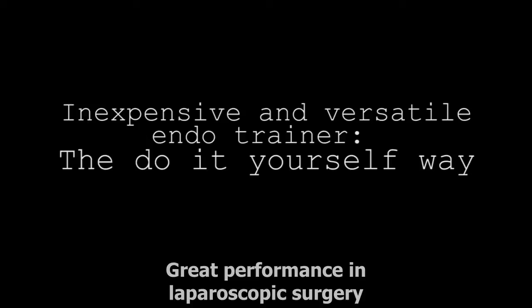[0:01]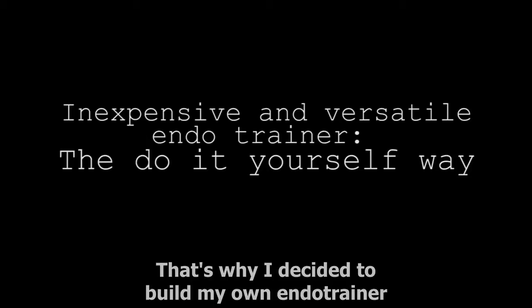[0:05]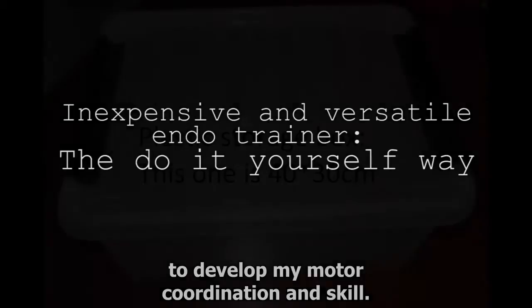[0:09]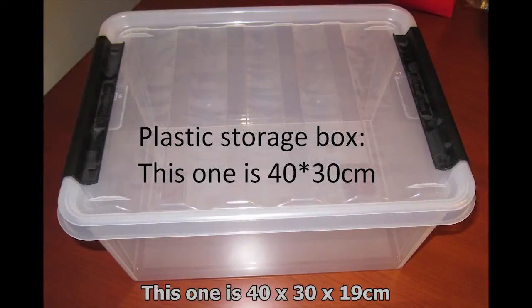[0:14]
Great performance in laparoscopic surgery can only be achieved with rigorous training. That's why I decided to build my own endotrainer to develop my motor coordination and skill. You will need a plastic storage box. This one is 40 by 30 by 19 centimeters.
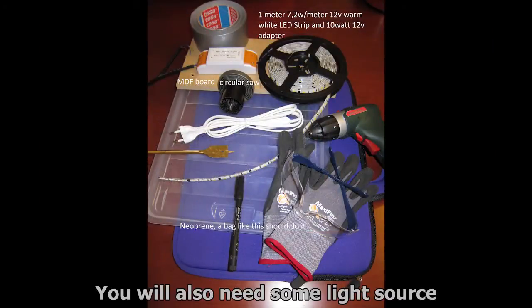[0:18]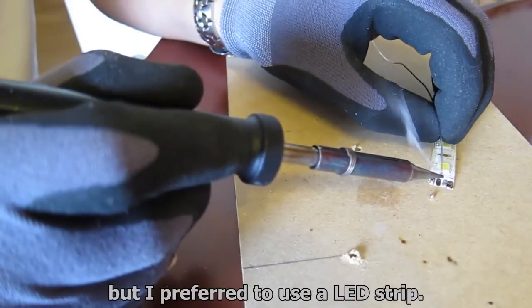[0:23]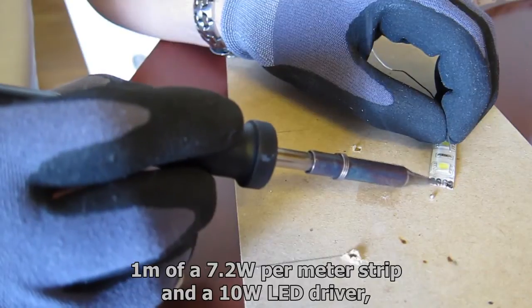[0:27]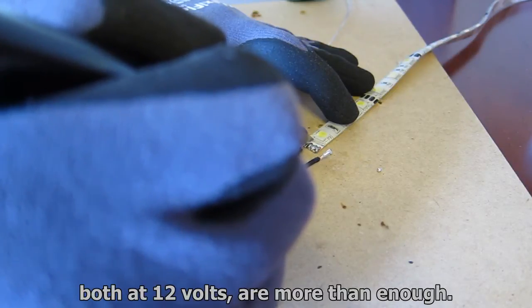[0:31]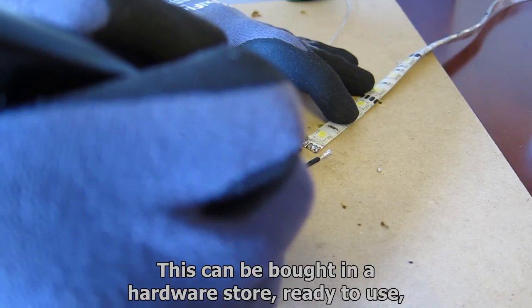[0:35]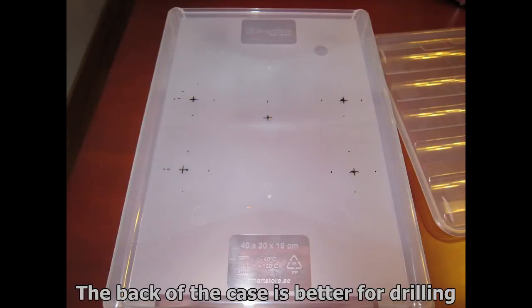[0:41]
You will also need some light source. A ready-made fluorescent light fixture should do it, but I prefer to use a LED strip. 1 meter of a 7.2 watt per meter strip and a 10 watt LED driver, both 12 volts, are more than enough. This can be bought in a hardware store ready to use for those who do not wish to splice and solder wires. The back of the case is better for drilling.
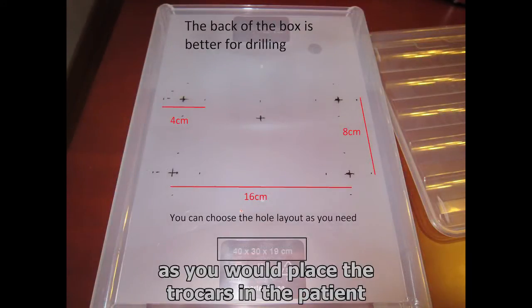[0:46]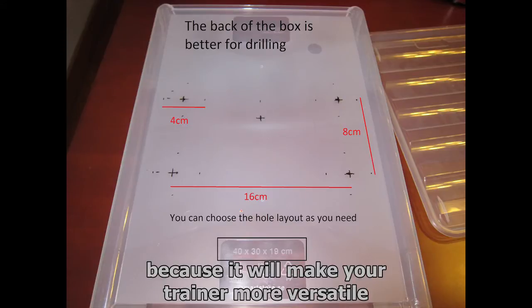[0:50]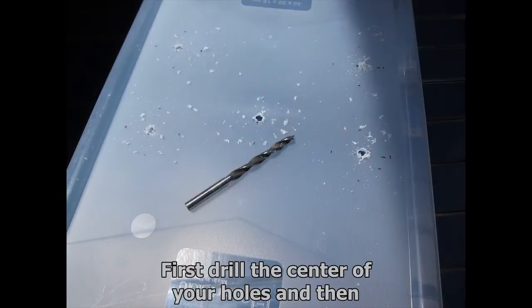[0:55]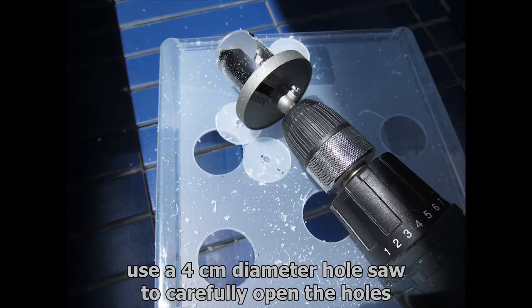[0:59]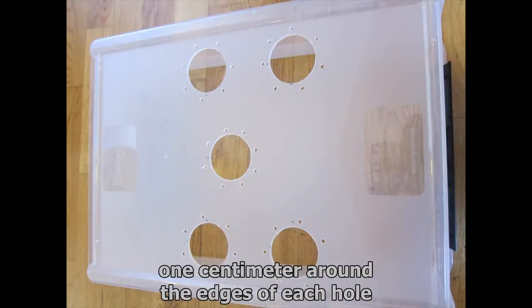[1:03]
You should mark the center of your holes as you would place the trocars in a patient. You should mark all possibilities you use because it will make your trainer more versatile. First drill the center of your holes and then use a 4 cm diameter hole saw to carefully open the holes. Then drill 3 mm holes less than a centimeter around the edges of each hole.
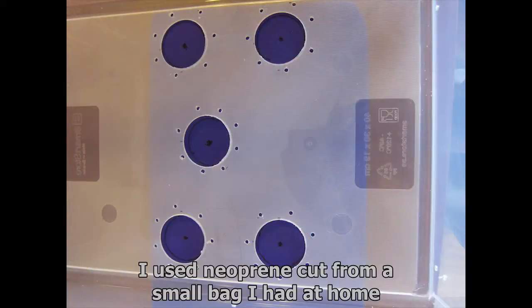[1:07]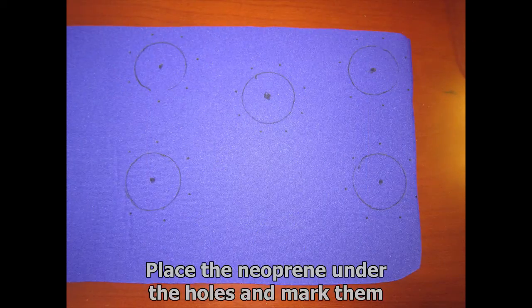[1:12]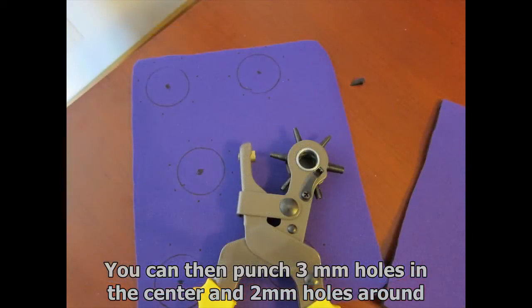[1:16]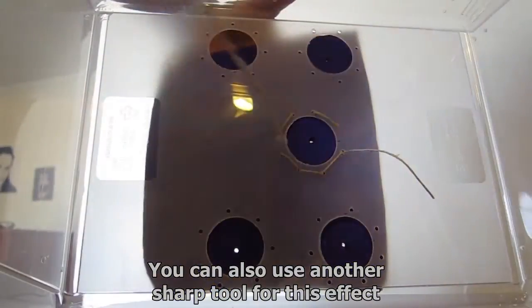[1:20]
I used a neoprene cut from a small bag I had at home. Place the neoprene under the holes and mark them. You can then punch 3 mm holes in the center and 2 mm holes around. You can also use another sharp tool for this effect.
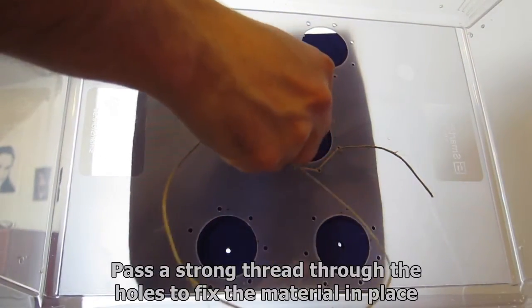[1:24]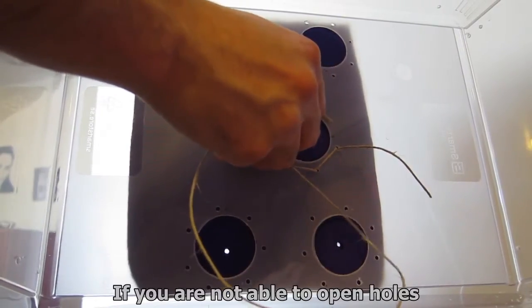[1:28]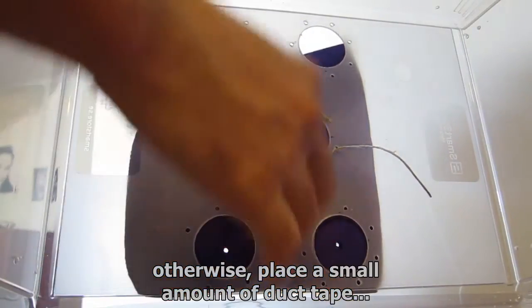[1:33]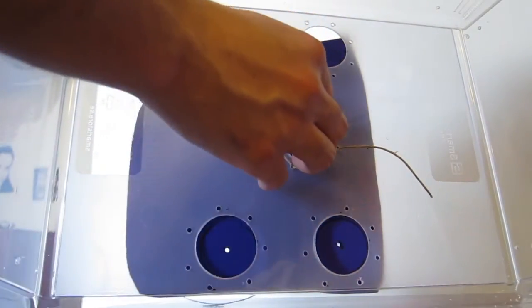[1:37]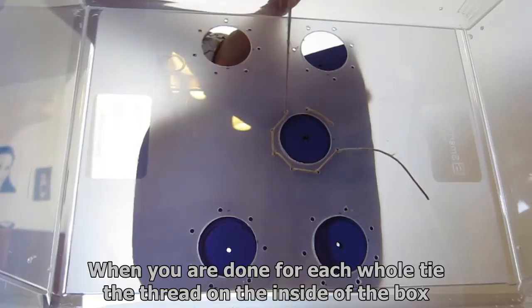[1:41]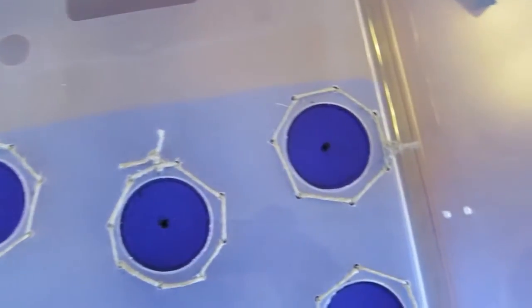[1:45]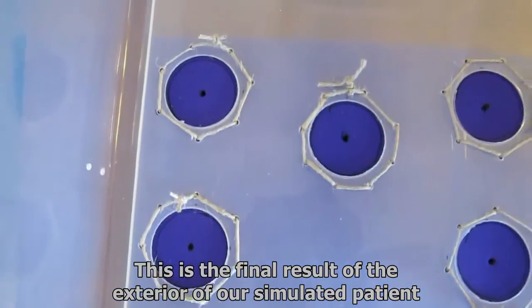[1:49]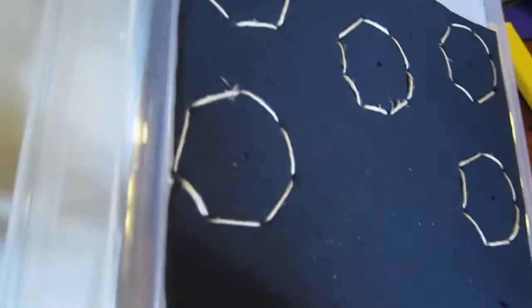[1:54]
Pass a strong thread through the holes to fix the material in place. If you are not able to open holes in the neoprene, it is better to use a needle. Otherwise, place a small amount of duct tape on one end to make the thread stiffer. When you are done for each hole, tie the thread in the inside of the box. This is the final result of the exterior of our simulated patient.
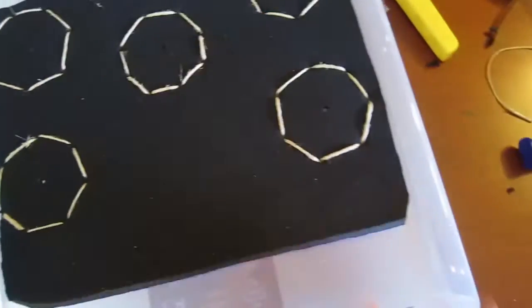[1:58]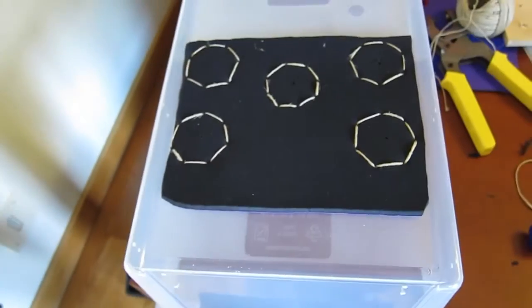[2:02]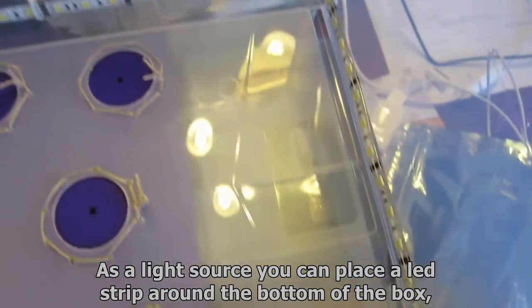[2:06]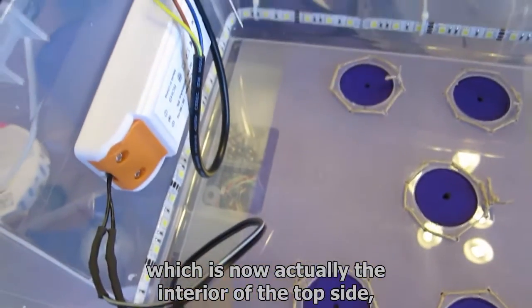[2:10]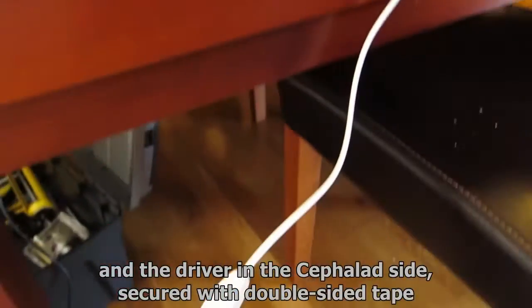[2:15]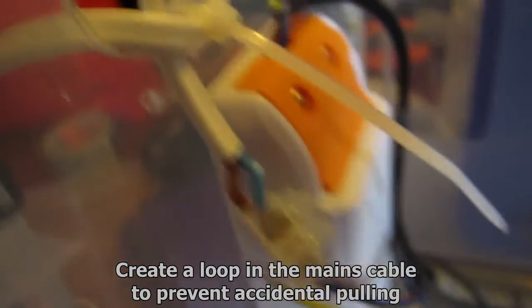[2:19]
As for the light source, you can place the LED strip around the bottom of the box, which is now actually the interior of the top side, and the driver on the cephalad side, secured with double-sided tape. Use cable ties to fix the strip and cables in place. Create a loop in the mains cable to prevent accidental pulling.
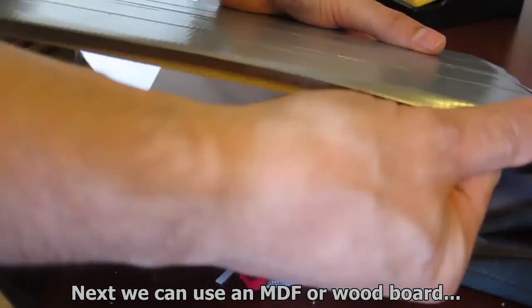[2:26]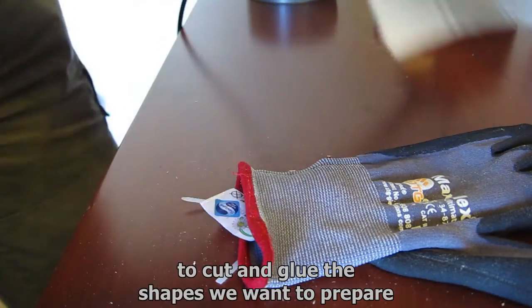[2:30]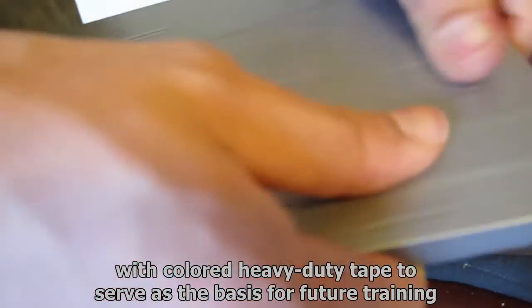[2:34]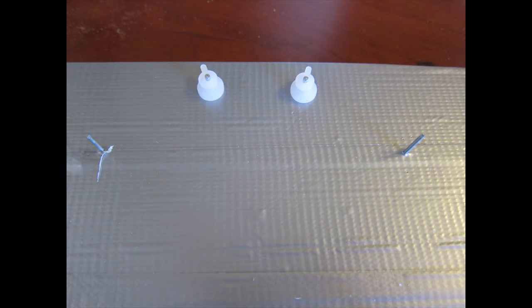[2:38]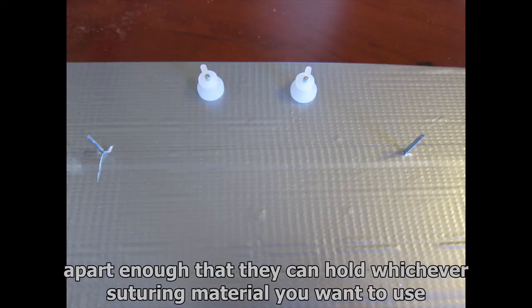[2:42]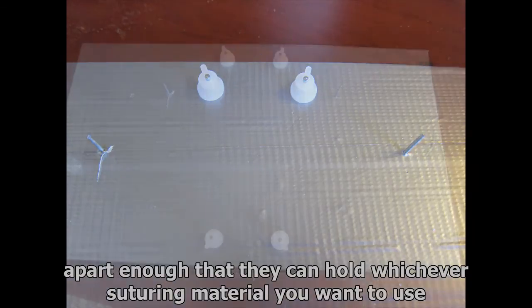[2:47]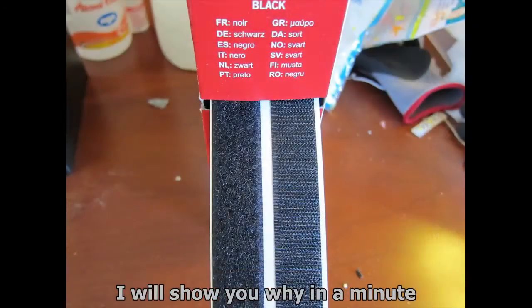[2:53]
Next, we can use an MDF or wood board to cut and glue the shapes we want to prepare. A small single piece of board can be covered with colored heavy-duty tape to serve as the basis for future training. It is convenient to nail 4 headless nails to the board, apart enough that they can hold whichever suturing material you want to use. I would also recommend these 4 small wall picture fixings. I will show you why in a minute.
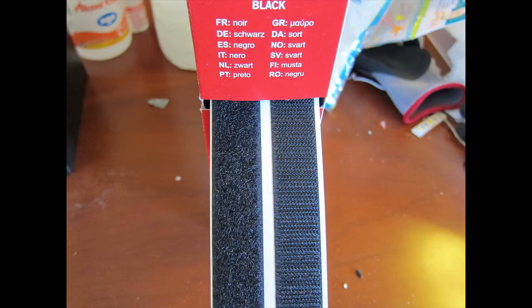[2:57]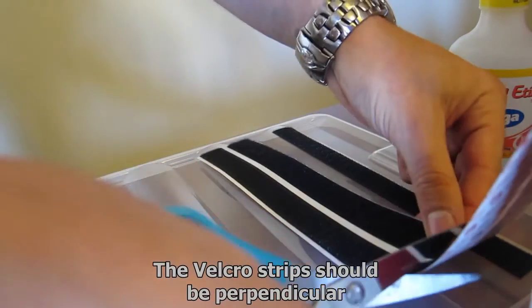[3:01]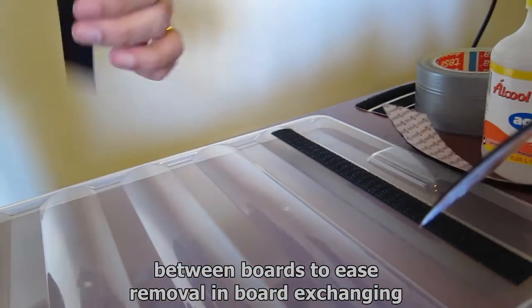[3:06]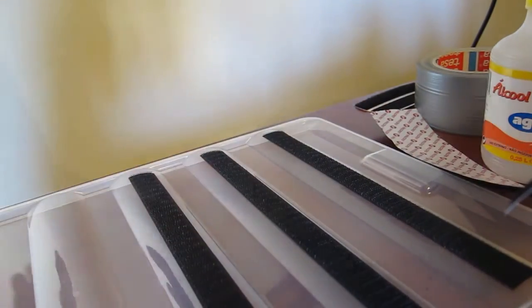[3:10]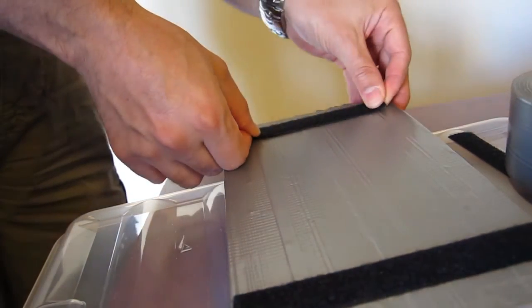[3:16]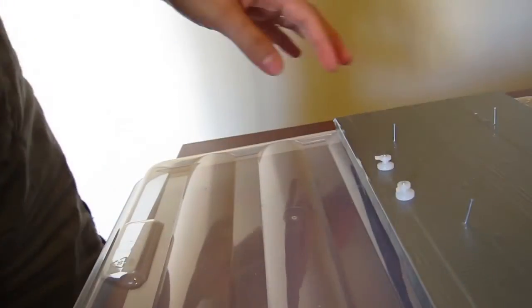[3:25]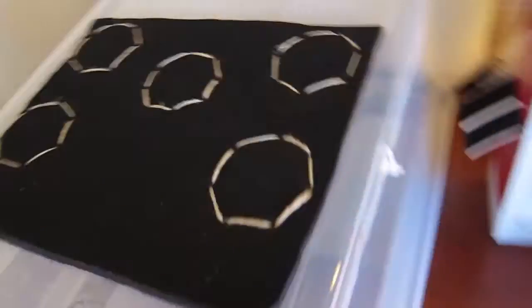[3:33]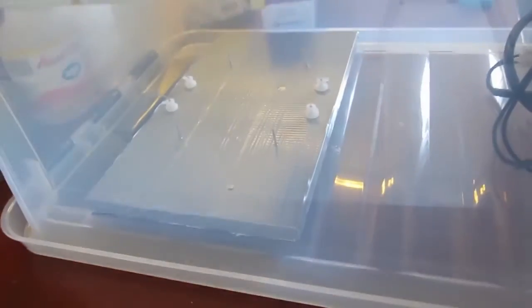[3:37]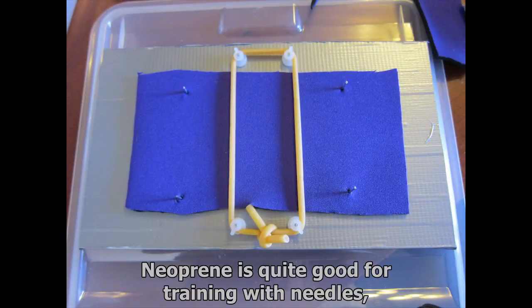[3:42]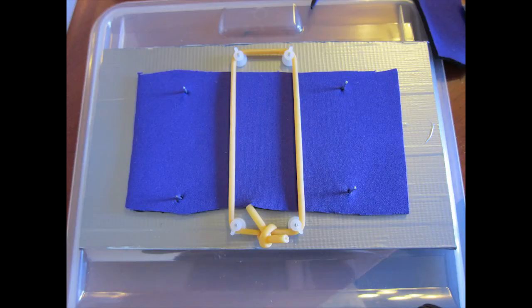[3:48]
You may use Velcro to fix the boards in place. This way, you can change them as you like. The Velcro strips should be perpendicular between boards to ease removal and board exchanging. Neoprene is quite good for training with needles, and a Foley catheter may be used for training tension knot tying.
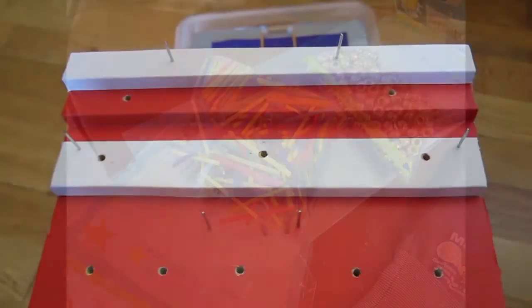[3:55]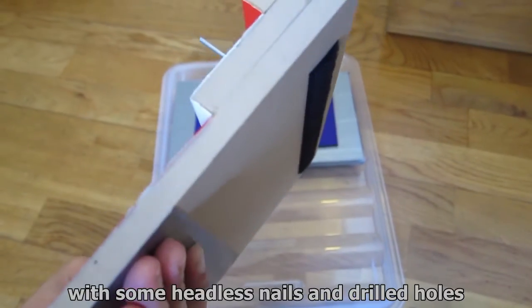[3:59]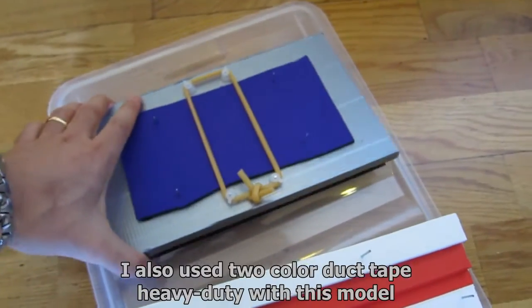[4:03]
You can make use of many materials to complete your training boards. Here you can see various sized MDF boards glued together, with some headless nails and drilled holes. I also used 2 color duct tape heavy duty with this model.
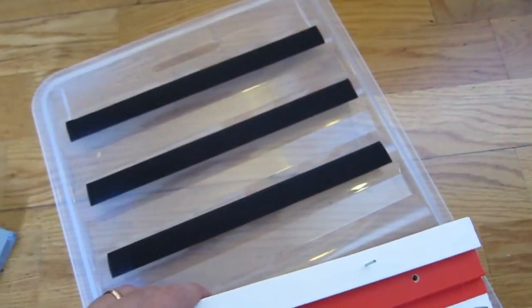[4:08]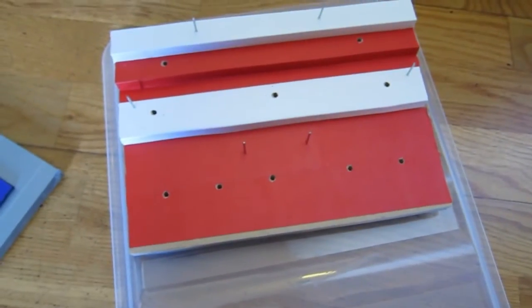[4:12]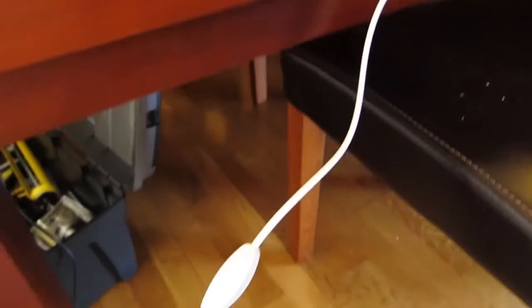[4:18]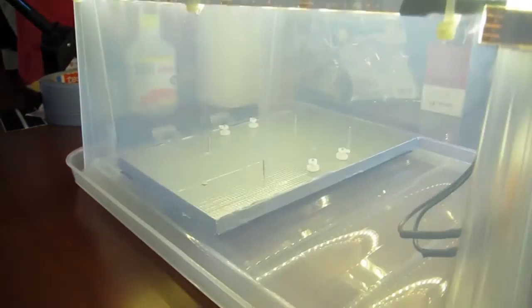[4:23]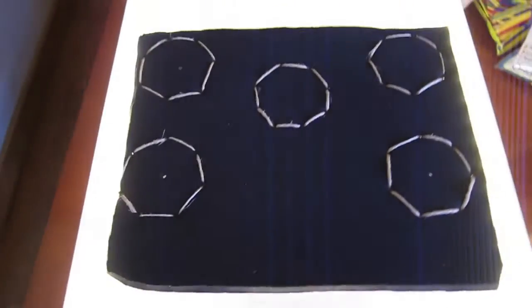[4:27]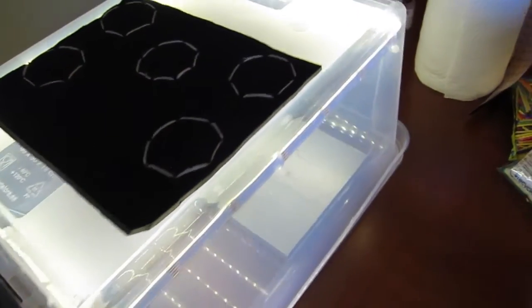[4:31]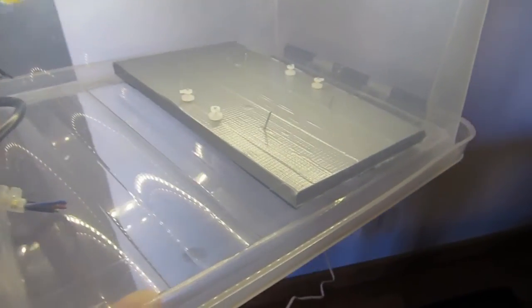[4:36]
Thank you.
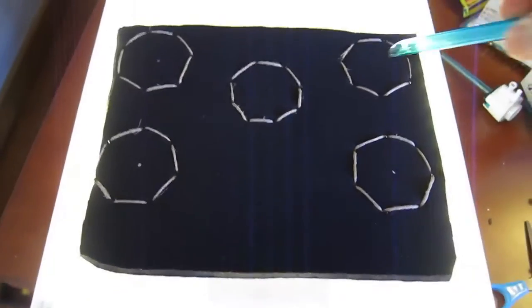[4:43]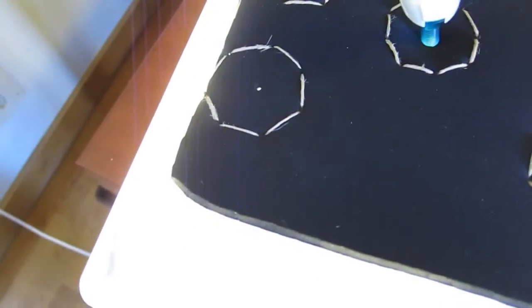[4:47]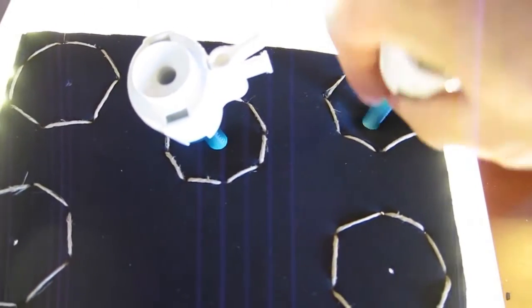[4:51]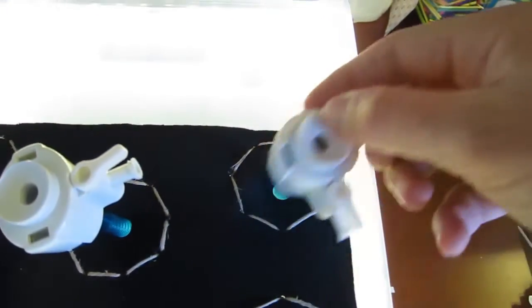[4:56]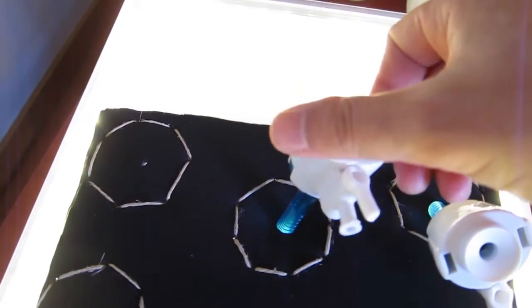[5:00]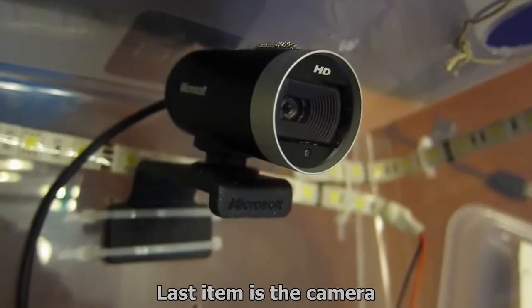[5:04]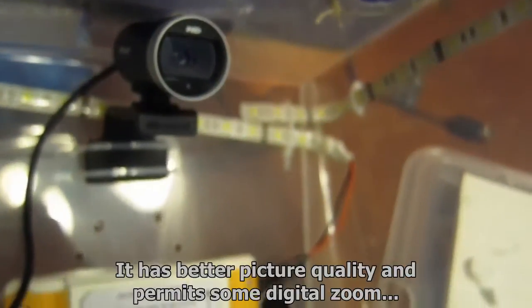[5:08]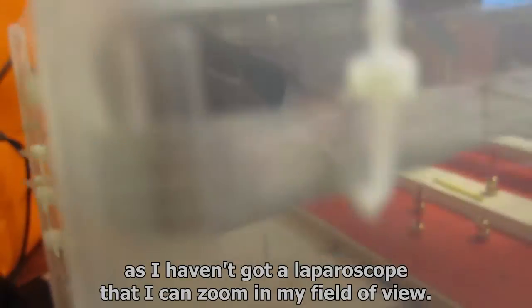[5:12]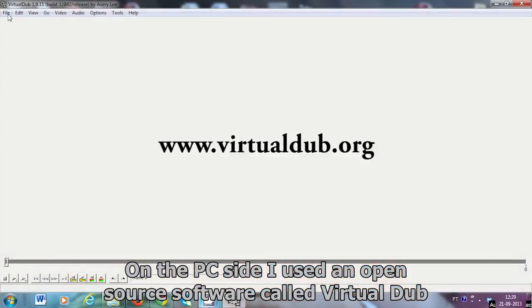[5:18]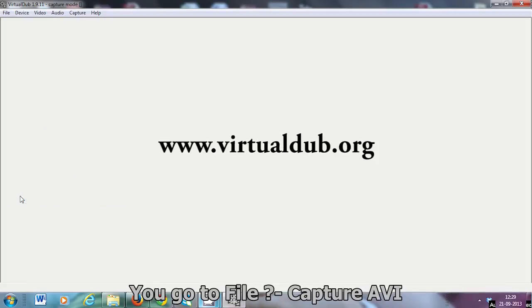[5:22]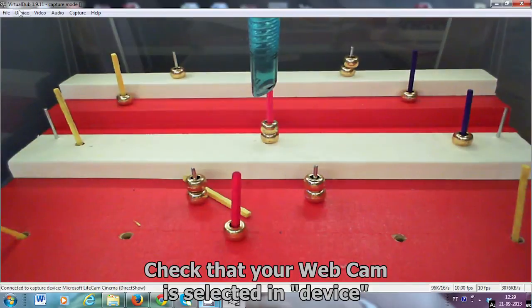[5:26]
Last item is the camera. I bought an HD camera for about 36 euros. It has better picture quality and it permits some digital zoom, as I haven't got a laparoscope that I can zoom in my field of view. On the PC side, I use an open source software called VirtualDub. You go to File, Capture AVI, check that your webcam is selected in Device.
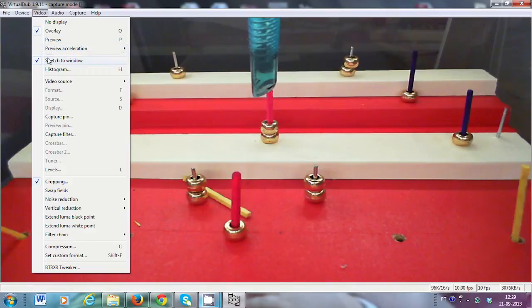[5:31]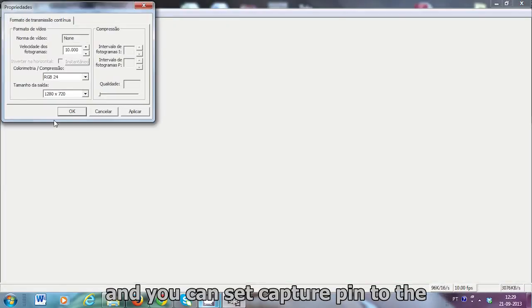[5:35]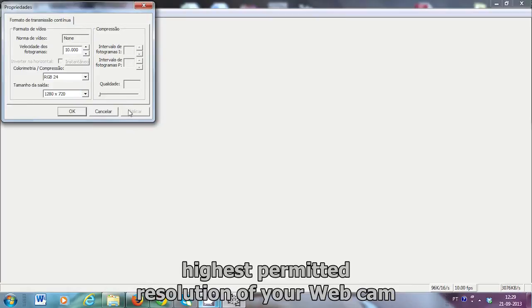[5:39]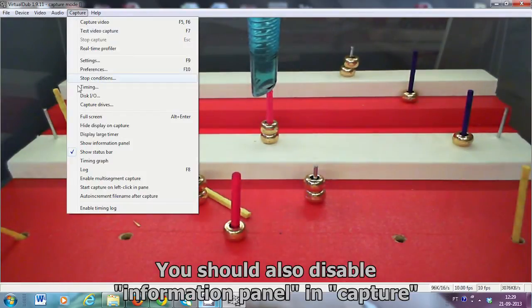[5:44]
Then you go to the Video, stretch the window, and you can set Capture Pin to the highest permitted resolution of your webcam. You should also disable the Information Panel in Capture.
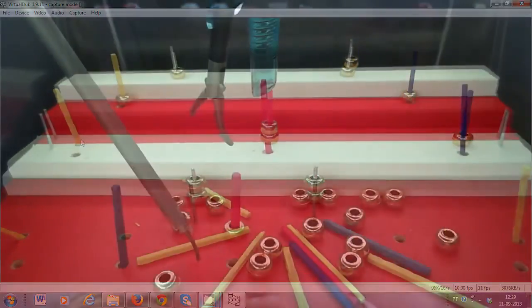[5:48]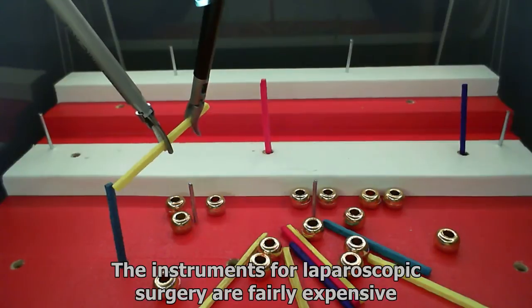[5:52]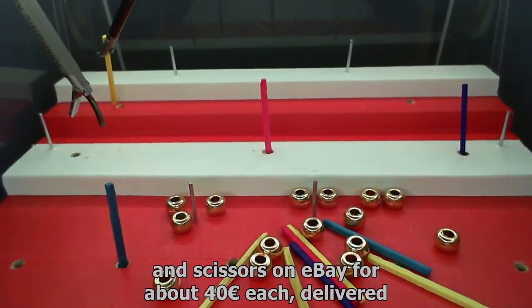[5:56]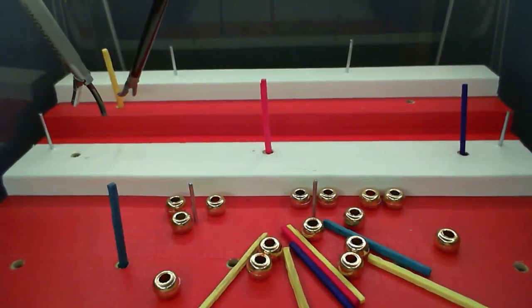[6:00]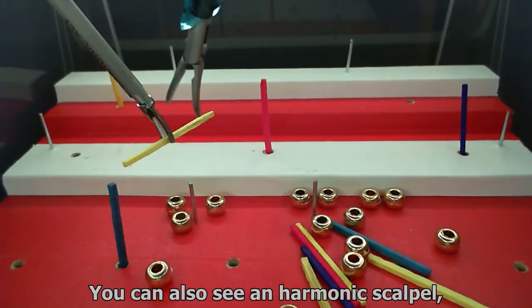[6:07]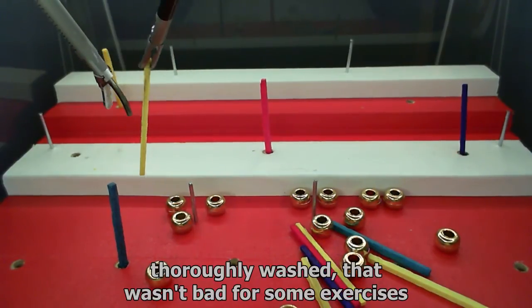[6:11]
The instruments for laparoscopic surgery are fairly expensive. I bought new disposable dissector and scissors on eBay for about 40 euros each, delivered. These are not quite like big name brand, but they are okay. You can also see an harmonic scalpel, thoroughly washed, that wasn't bad for some exercises.
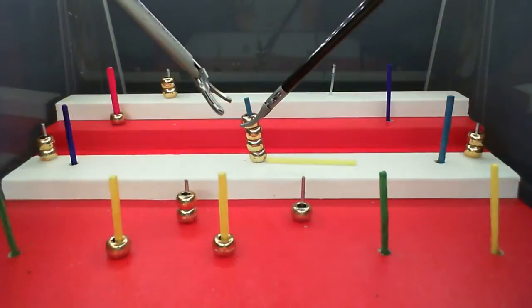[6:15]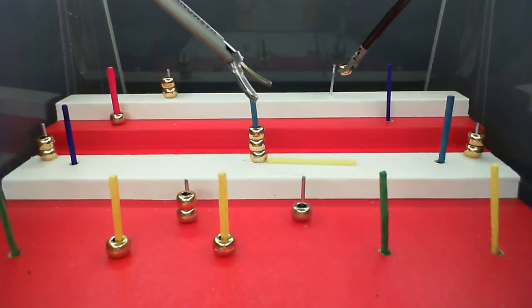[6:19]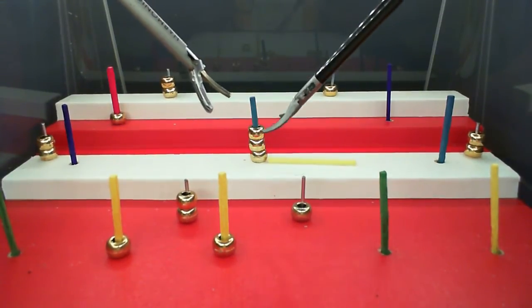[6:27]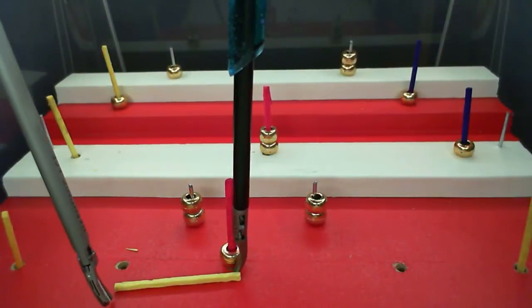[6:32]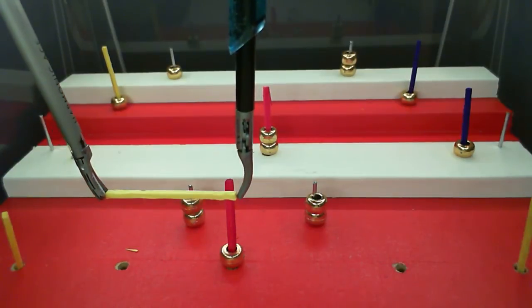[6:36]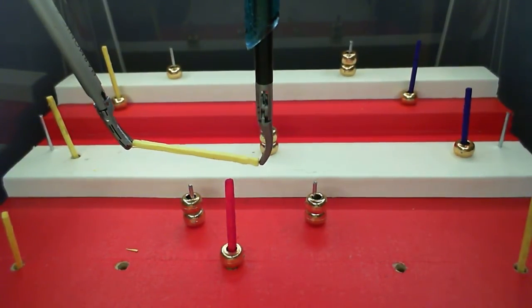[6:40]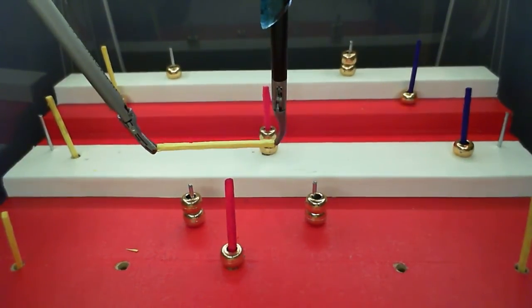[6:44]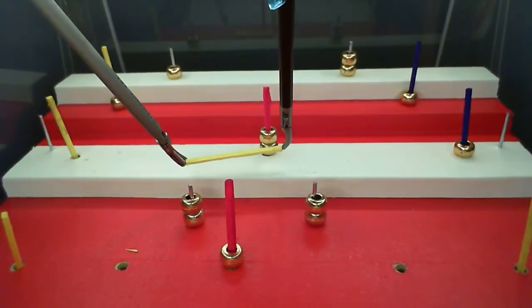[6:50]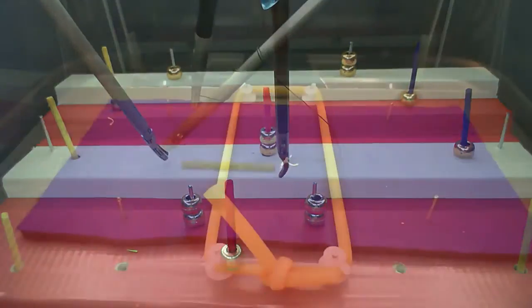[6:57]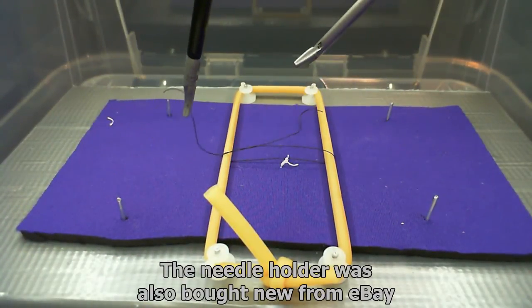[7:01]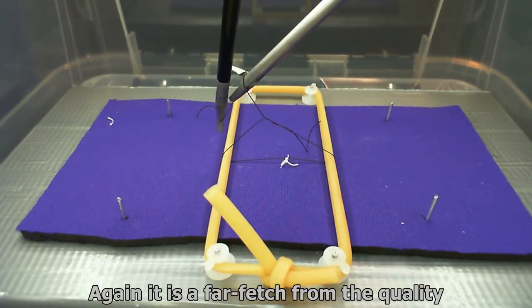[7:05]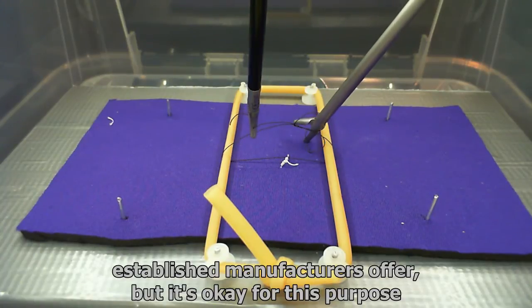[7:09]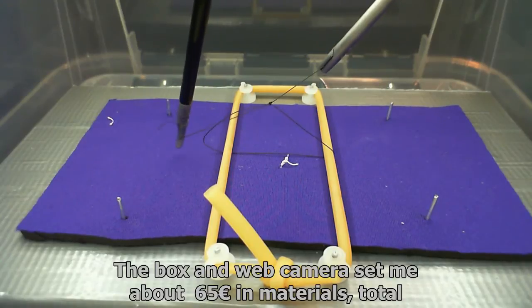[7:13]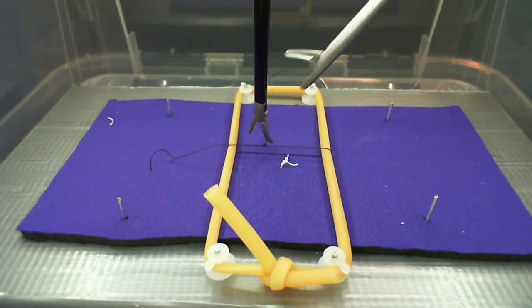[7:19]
The needle holder was also bought new from eBay. It was about 180 euros delivered. Again, it is a far fetch from the quality established manufacturers offer, but it's okay for this purpose. The box and web camera set me about 65 euros in materials total. I find it fairly cheap for this kind of result.